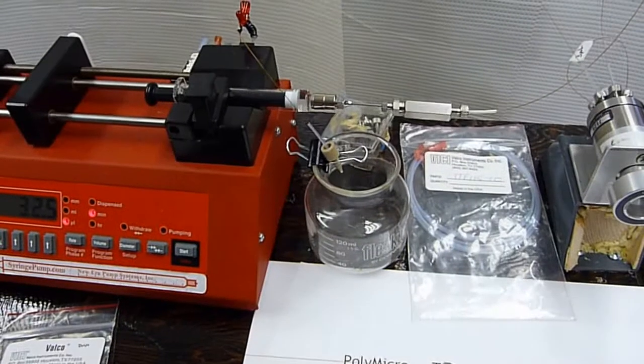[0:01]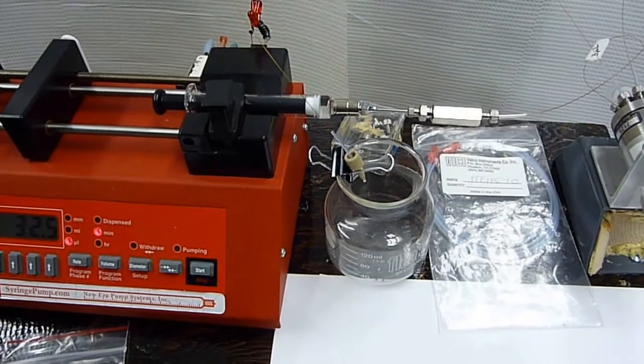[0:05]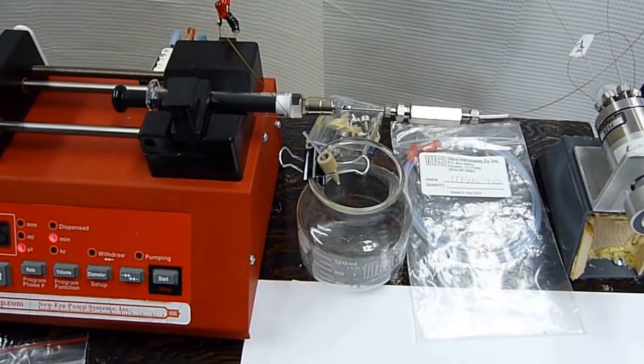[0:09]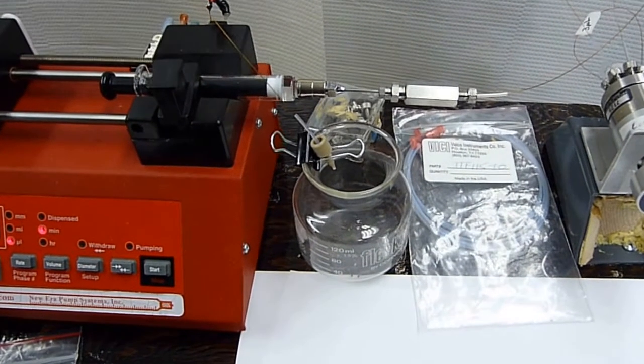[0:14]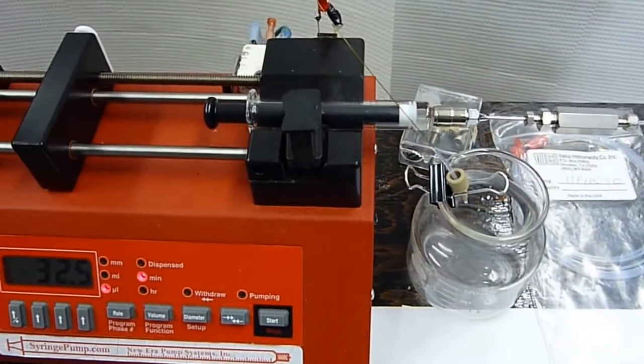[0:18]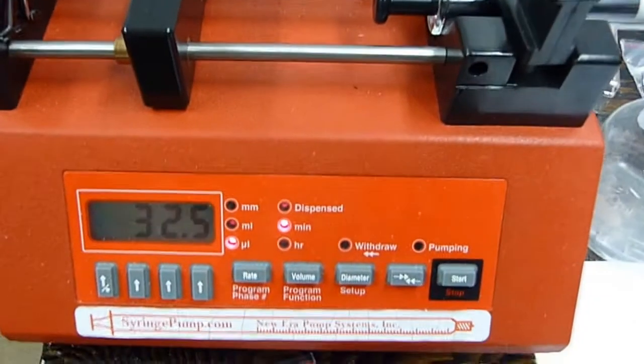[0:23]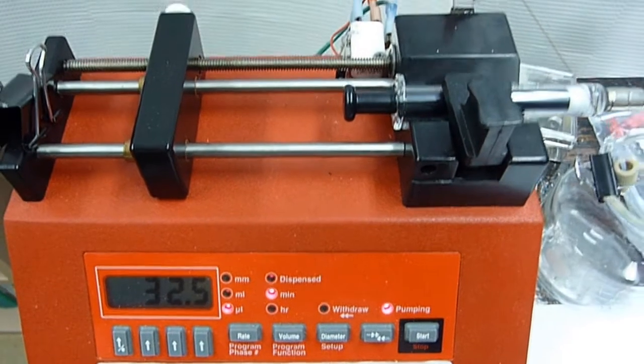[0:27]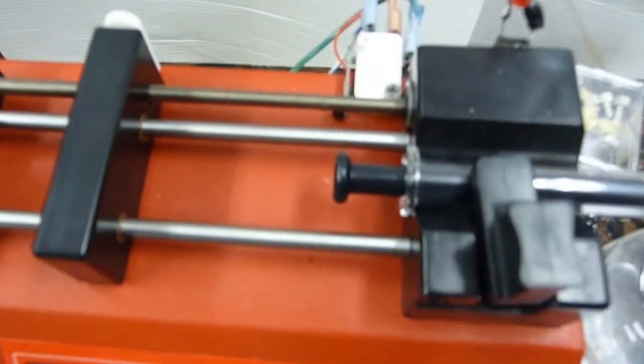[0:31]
This is a description of the setup for using straight chloroform to introduce a sample into the mass spec. Let me go over the components, starting with the syringe pump. So this is our typical syringe pump. It's infusion only, so it's relatively cheap, about $300.
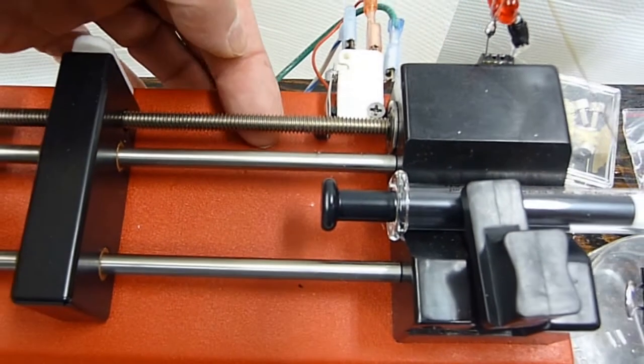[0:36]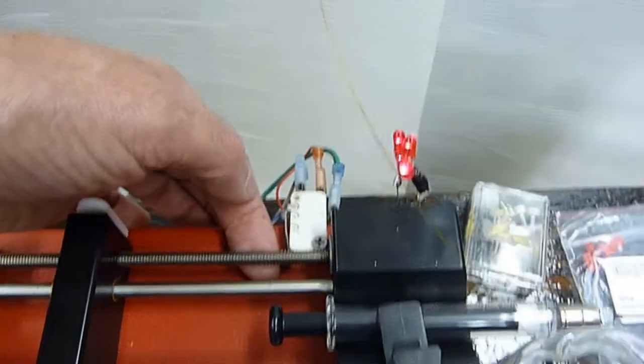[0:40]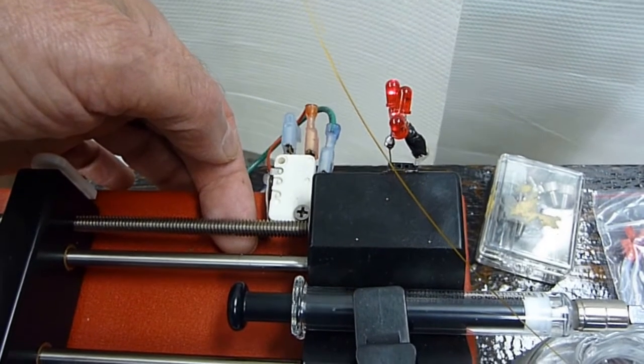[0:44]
And this one's been modified so that when it gets down to the end, it's going to press against this switch, and the lights will come on, indicating to the user that it's not pumping anymore.
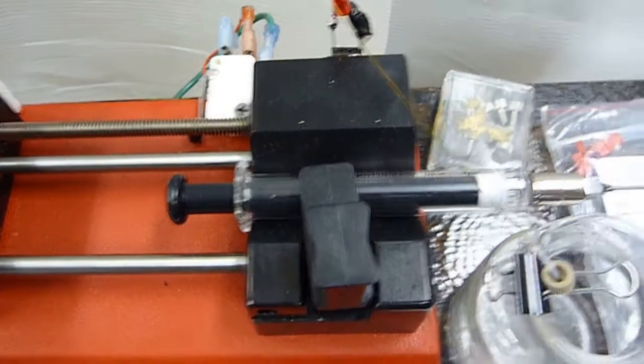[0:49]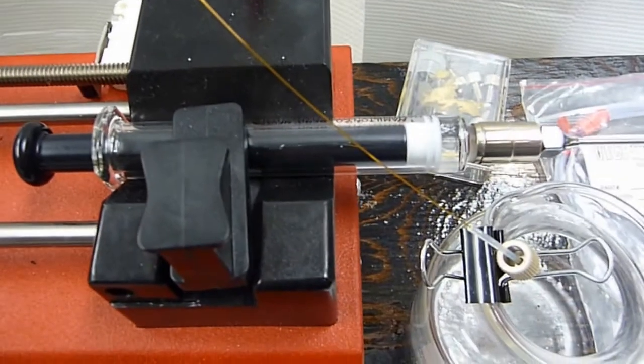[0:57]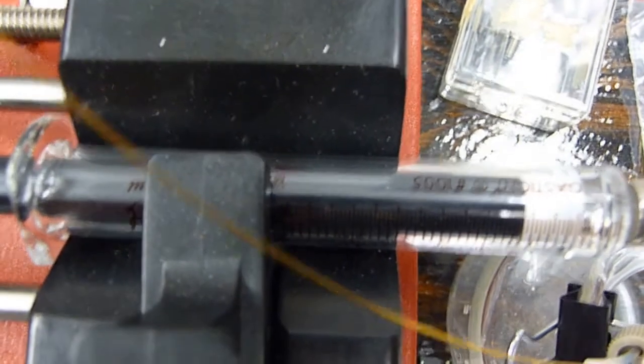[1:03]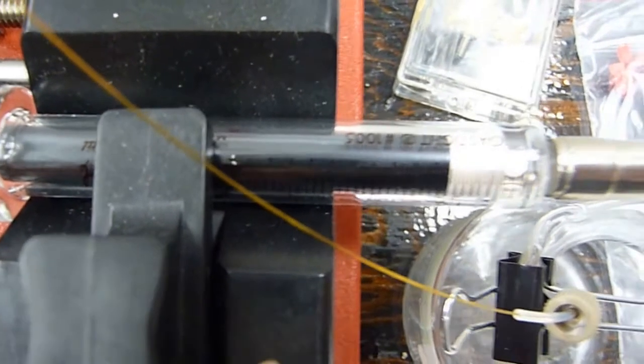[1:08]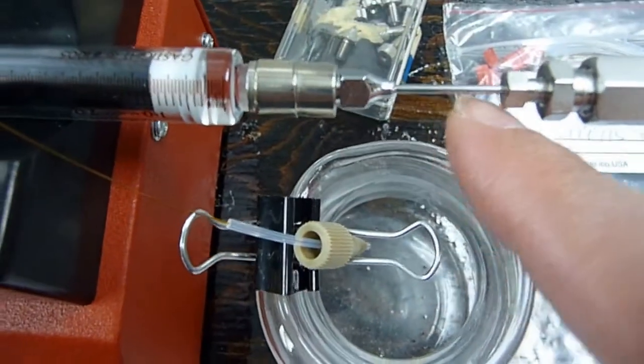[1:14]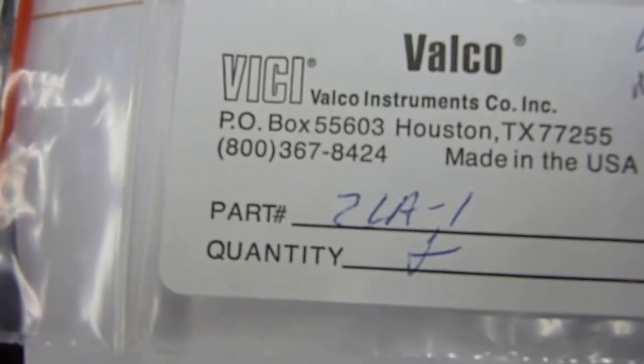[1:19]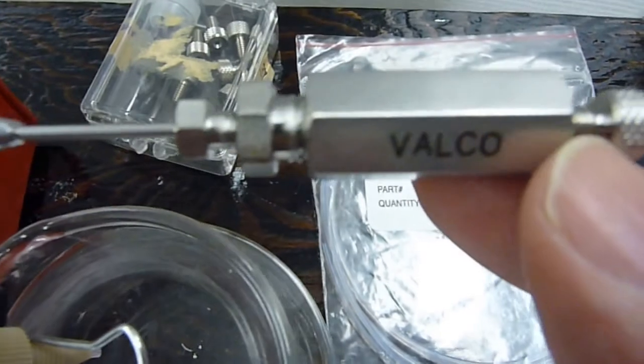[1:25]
And then we have our glass gas-tight syringe. So let me pull this out. Alright, so it's a Hamilton syringe, 5 ml, gas-tight, number 1005. And then that's connected via this Valco connector, so that is this part here. And then it's connected to a filter that has replaceable frits.
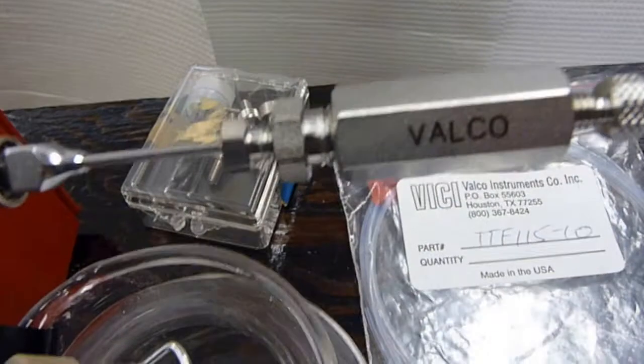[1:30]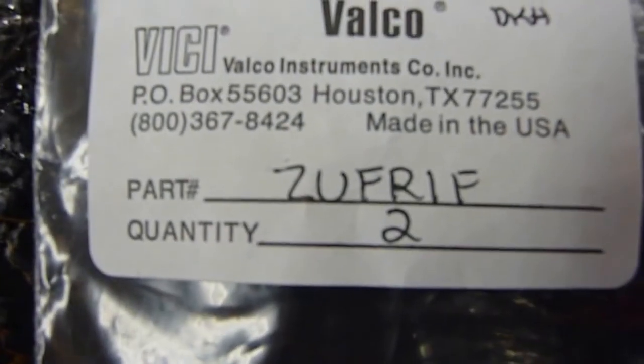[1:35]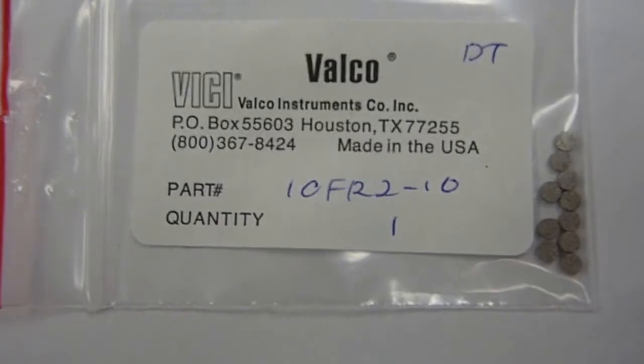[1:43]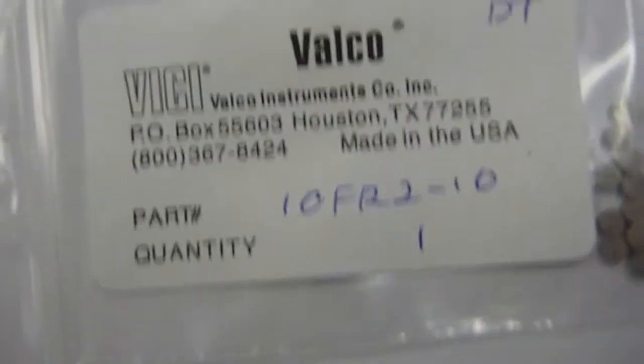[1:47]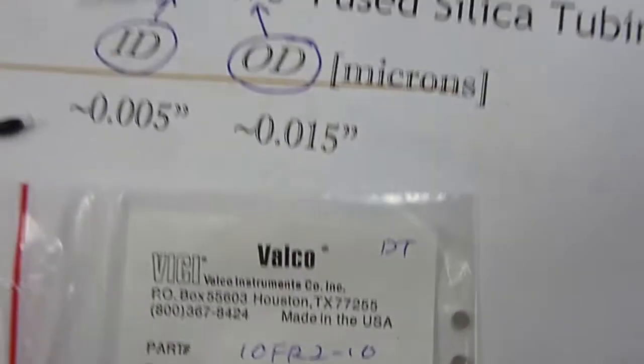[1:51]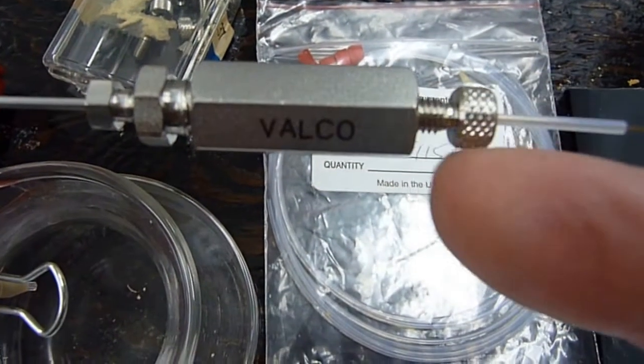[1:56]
And so this part is that. Got two of those. That's what the filter looks like in the pack. Let me get the filter; it has these cute little replaceable frits. Alright. 10 microns. So that's to filter the solvent. And then we have a connection with some fused silica tubing.
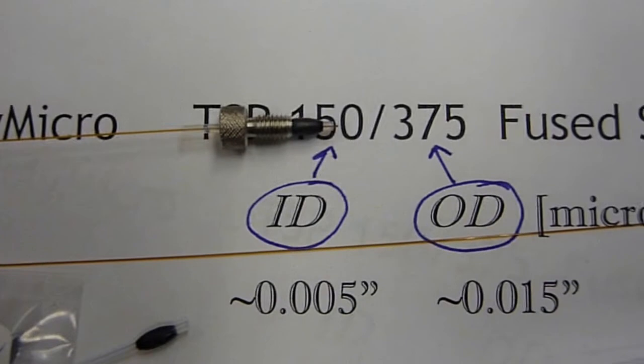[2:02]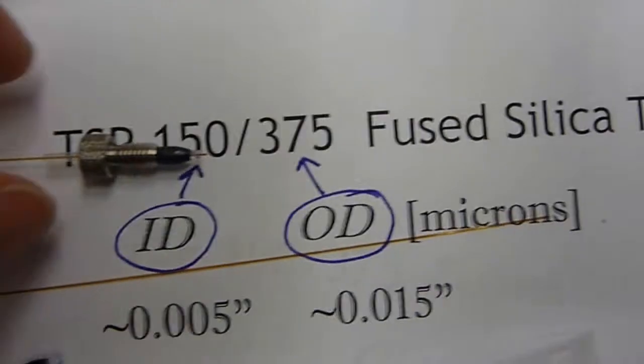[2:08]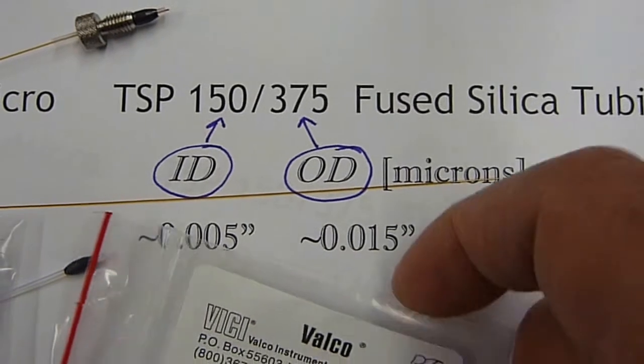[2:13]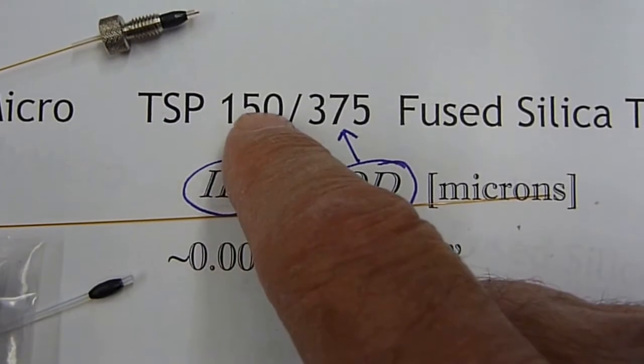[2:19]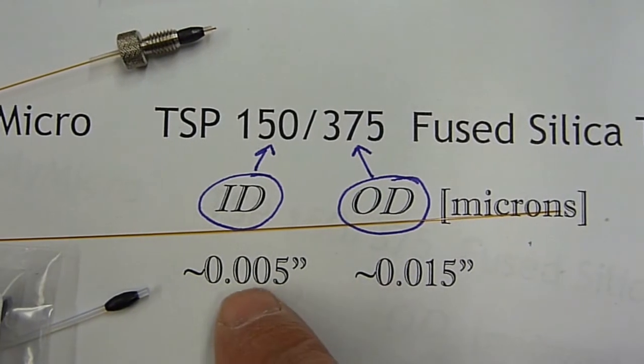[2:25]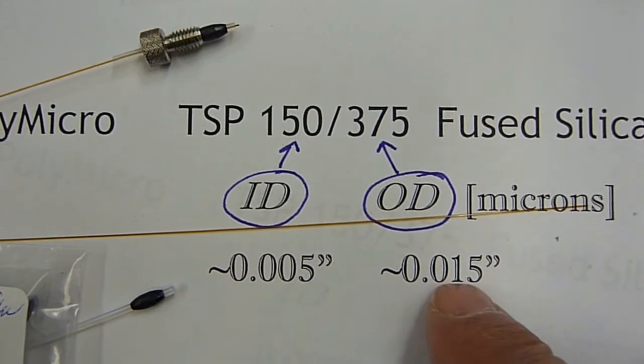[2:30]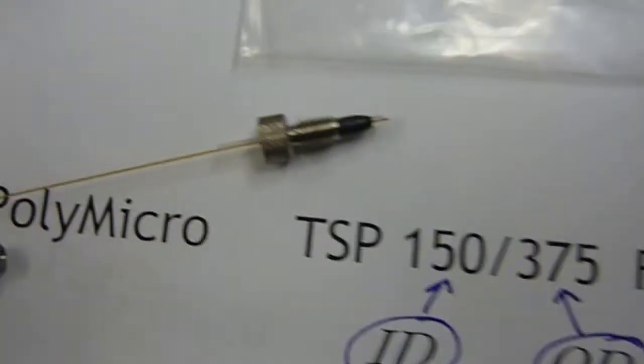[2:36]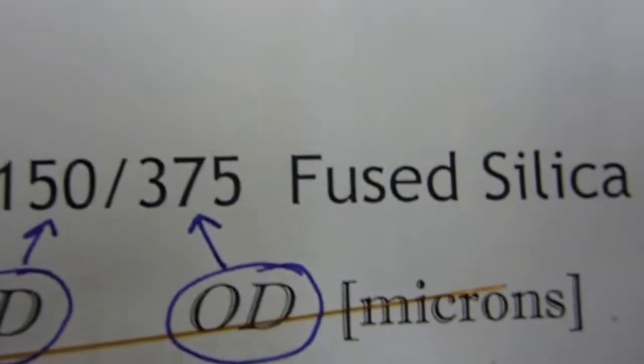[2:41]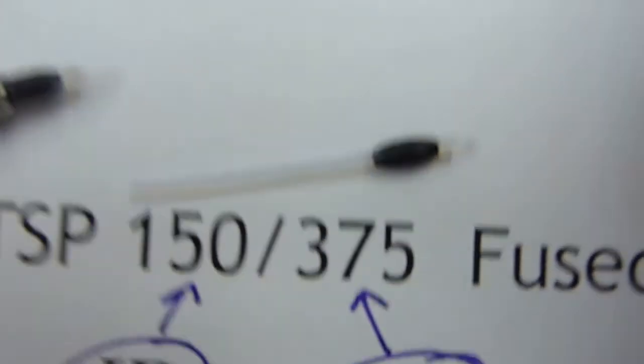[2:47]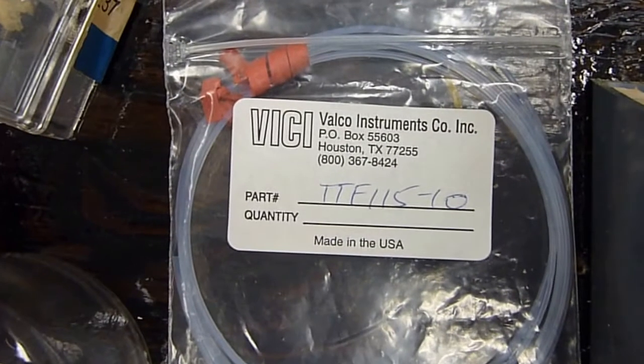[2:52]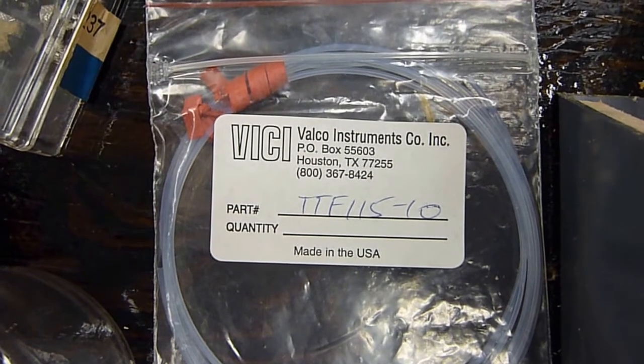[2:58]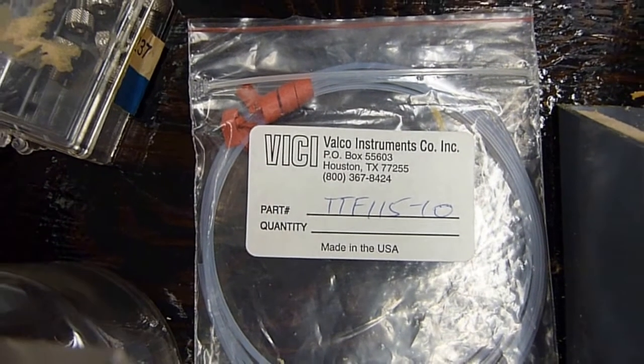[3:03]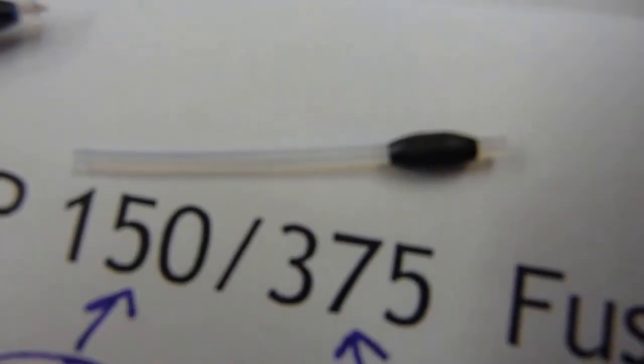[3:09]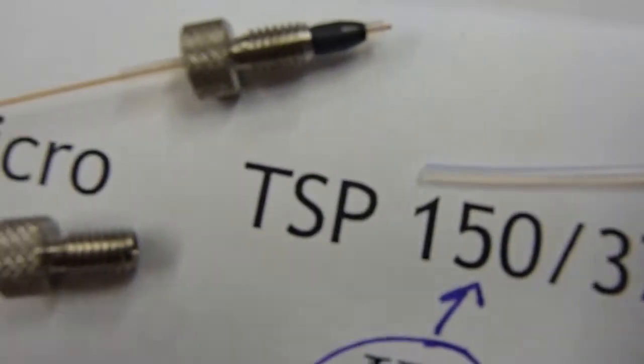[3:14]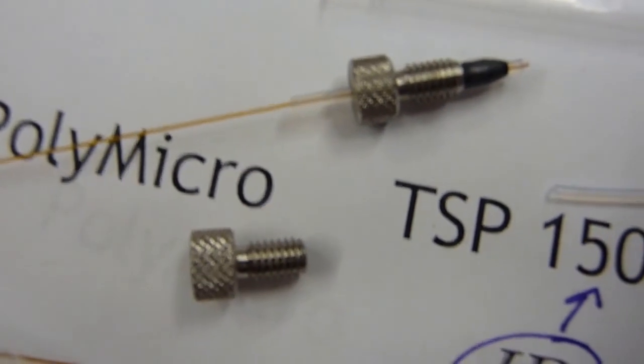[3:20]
And then for the adapter, use Teflon tubing. The Teflon tubing has an inside diameter of 15 thousandths, so the fused silica tubing will slide into the Teflon tubing. And then I like to use these double-sided ferrules and stainless steel finger-tight connectors. They're made by SSI, I think Fisher sells them in the U.S.
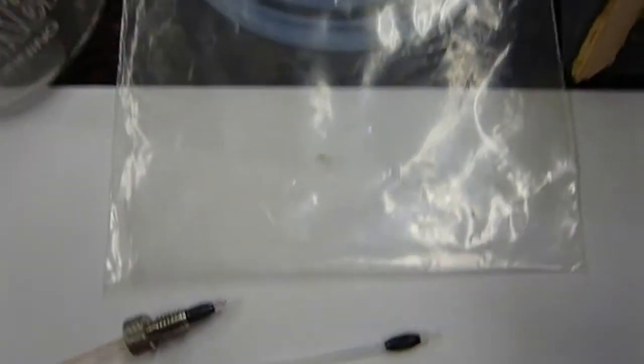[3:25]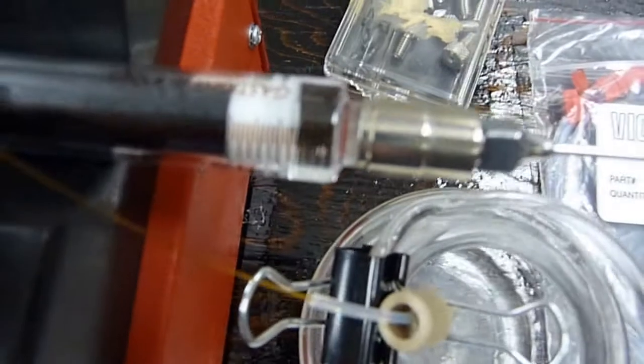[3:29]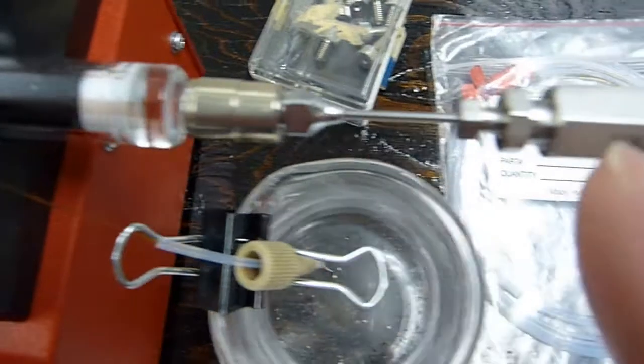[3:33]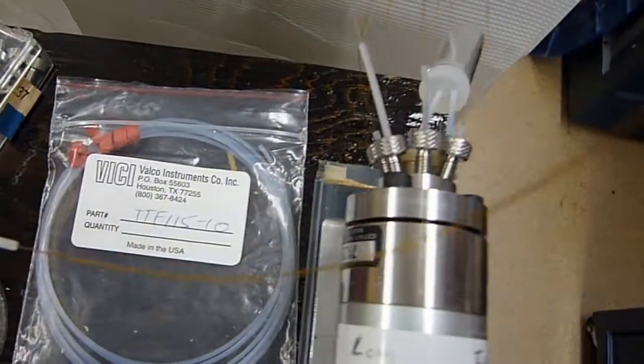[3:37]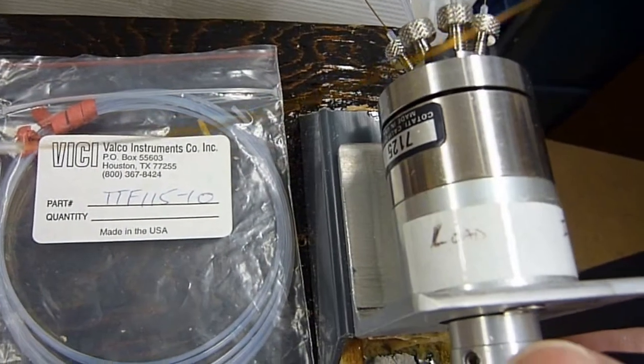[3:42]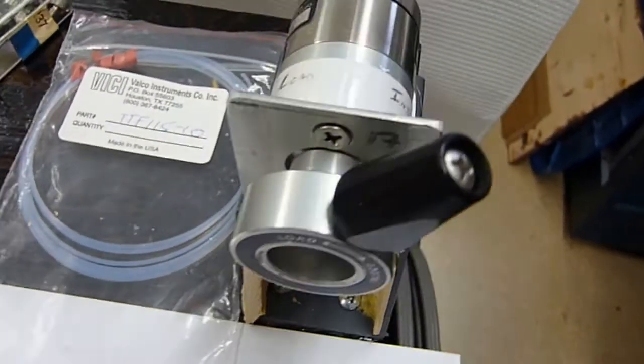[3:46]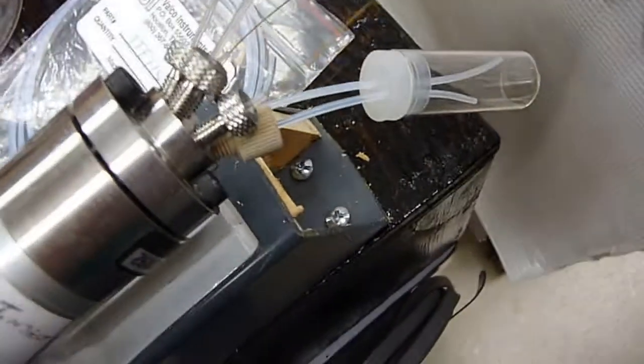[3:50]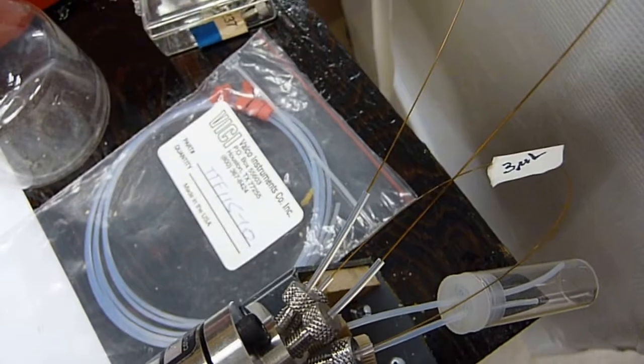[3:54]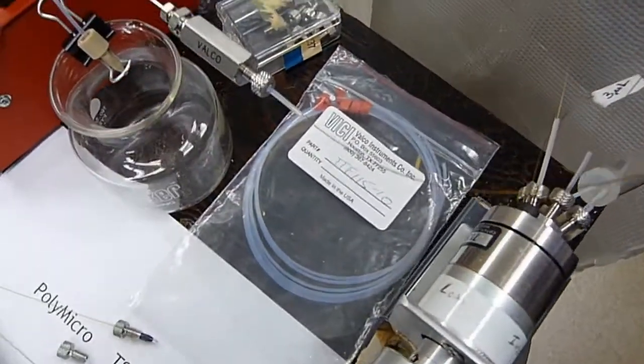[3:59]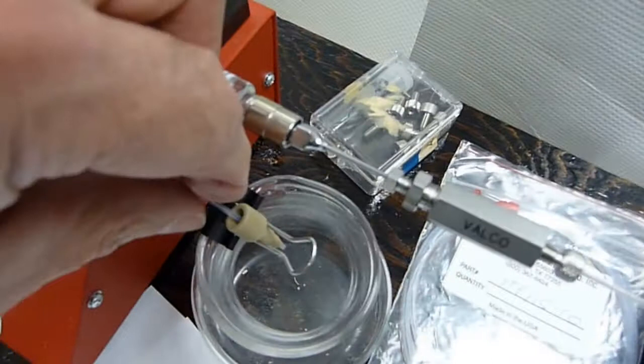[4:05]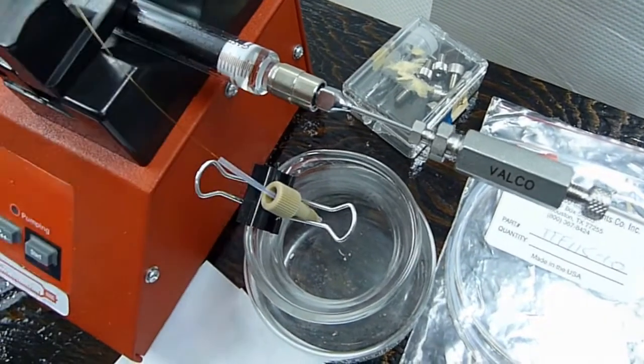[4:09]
So far, all the chloroform is going to see is the Teflon on the plunger, stainless steel, fused silica, and then it makes its way to the classic 7125 Rheodyne valve. And then this has been set up, so we have a 3 microliter loop, and it's a 6-port injection valve, and the solvent makes its way to this, which is what's going to be connected to the mass spec.
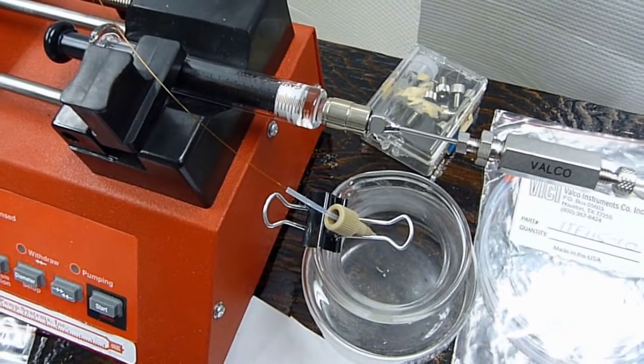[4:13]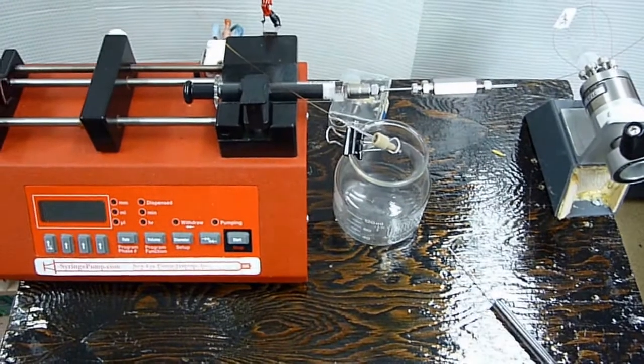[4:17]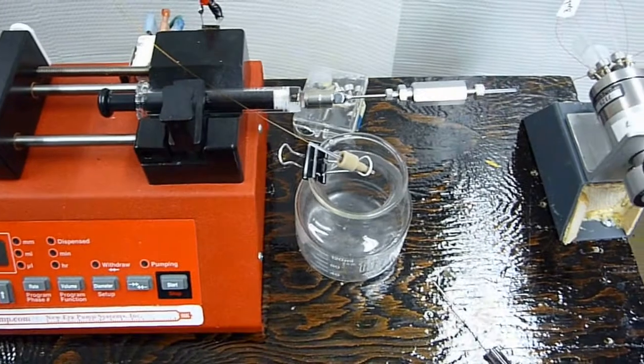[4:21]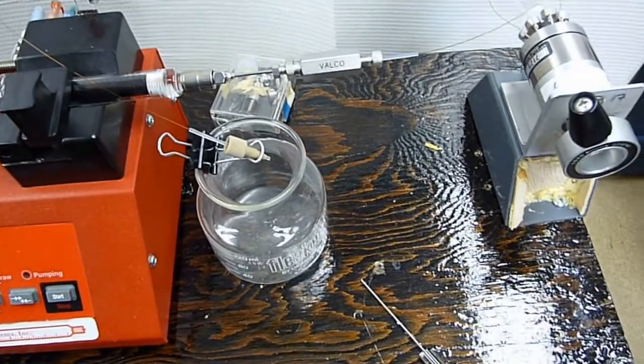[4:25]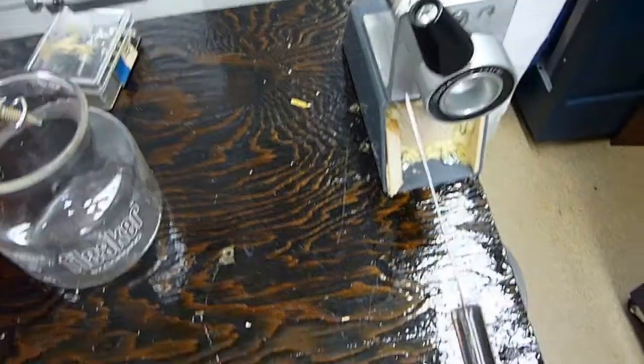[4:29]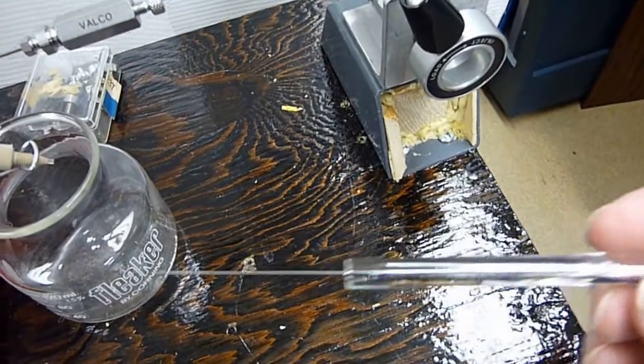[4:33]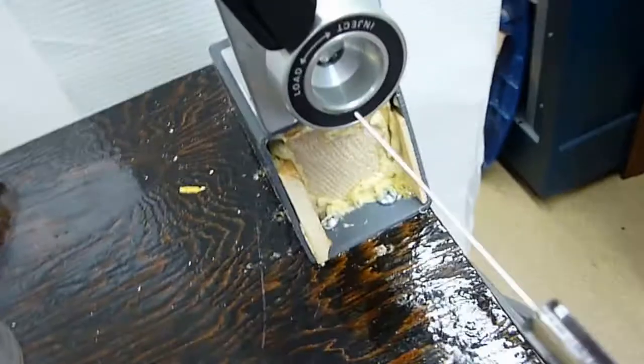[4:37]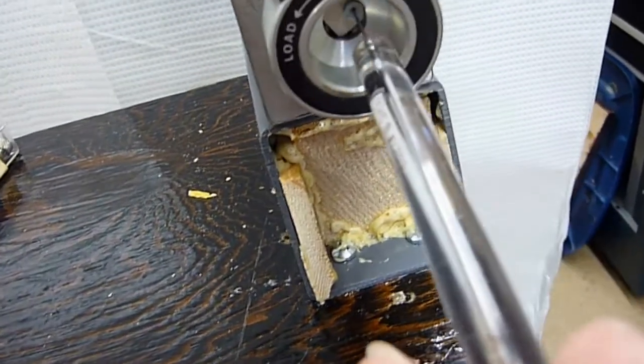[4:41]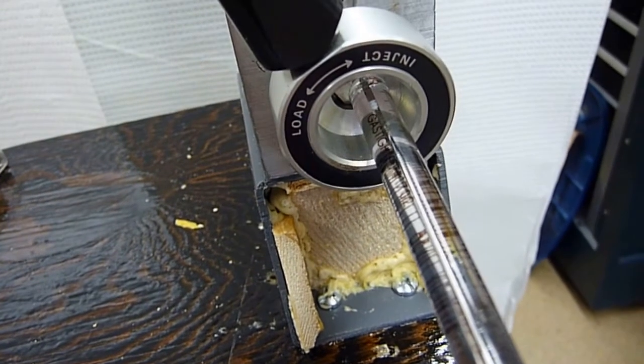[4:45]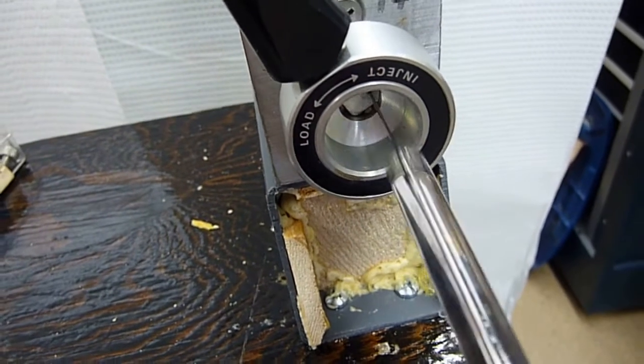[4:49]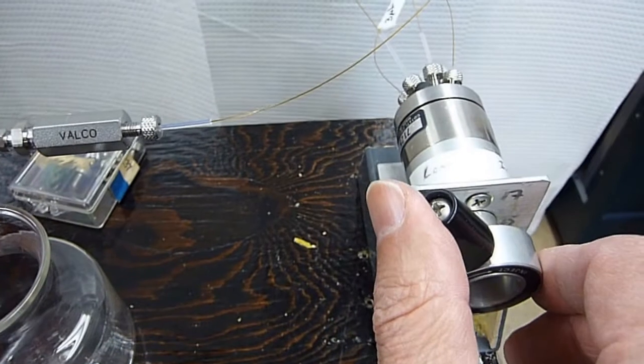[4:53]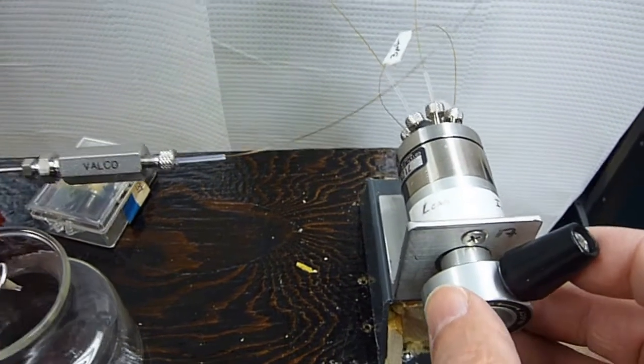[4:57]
So next we'll take it up and hook it up to the mass spec. The system is on the cart right now, just for convenience as far as moving it around and keeping it out of harm's way. The sample is going to be in the typical gas-tight, blunt-nose, 25 microliter syringe, and the sample will go through the needle guide like that, and then be introduced and undoubtedly overfill the 3 microliter loop. And then you'll have injection by moving it that way.
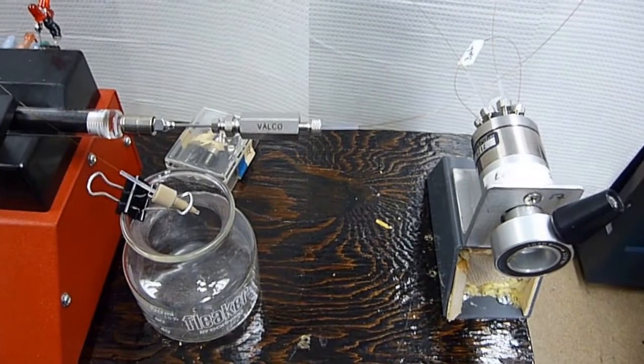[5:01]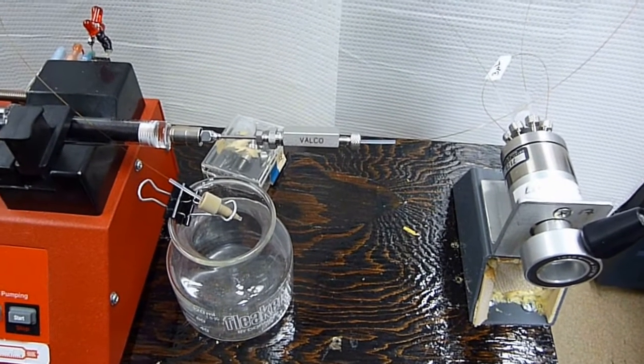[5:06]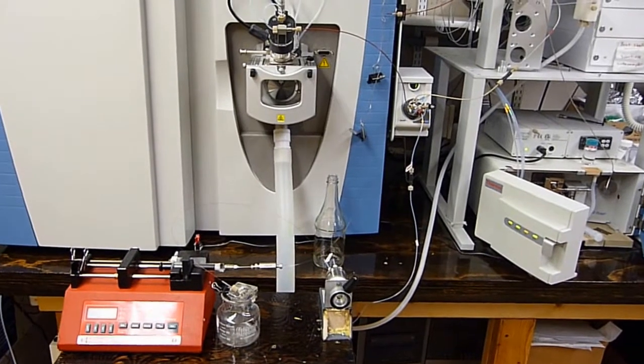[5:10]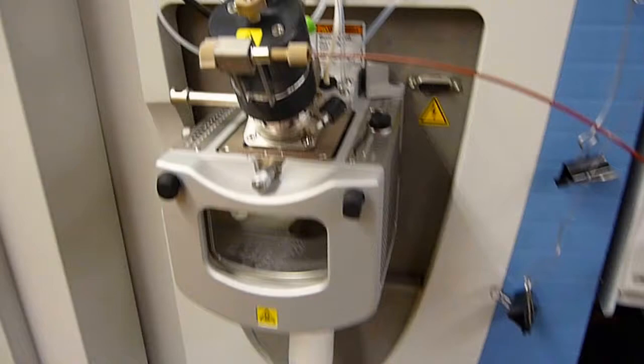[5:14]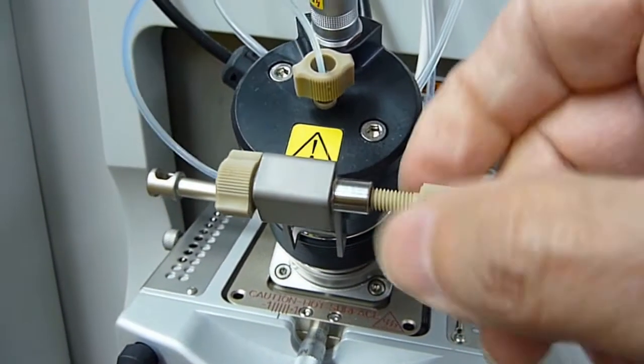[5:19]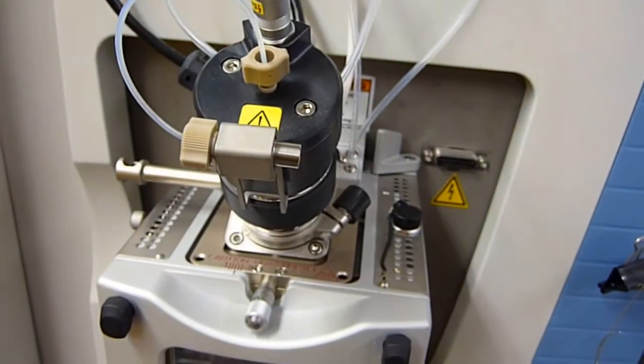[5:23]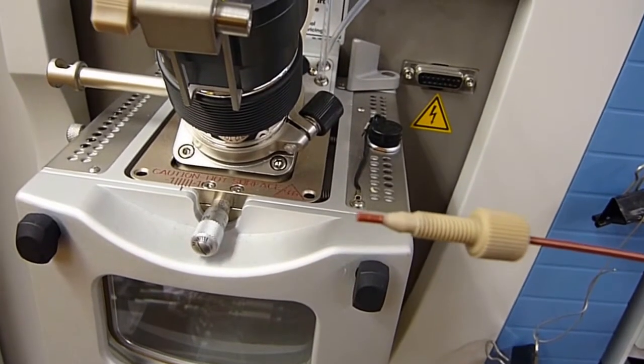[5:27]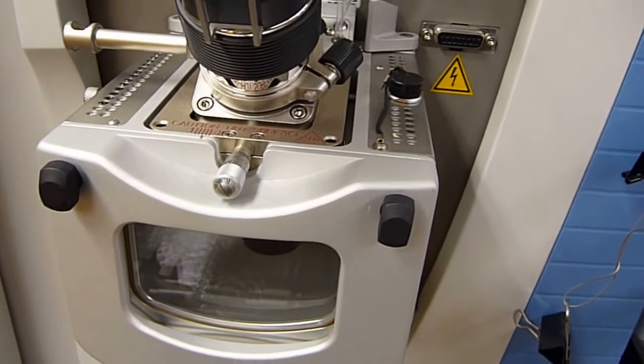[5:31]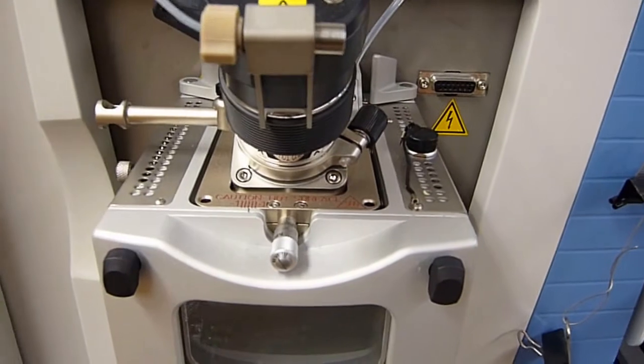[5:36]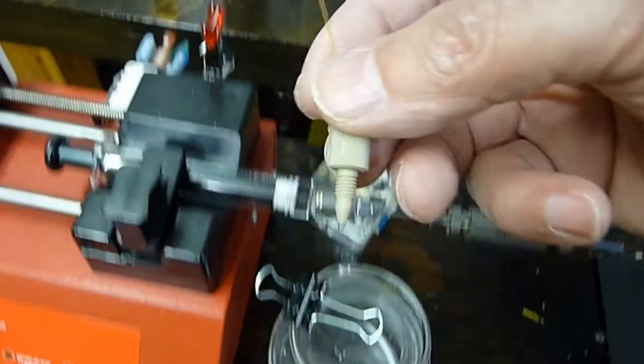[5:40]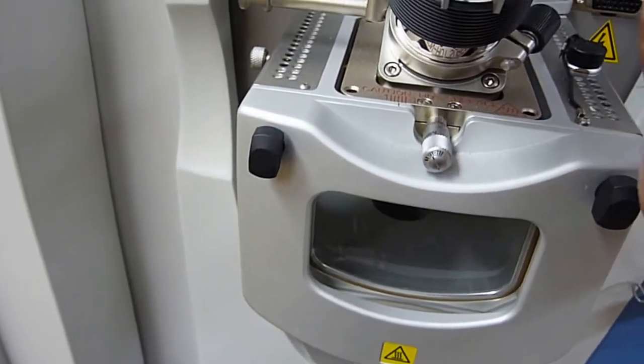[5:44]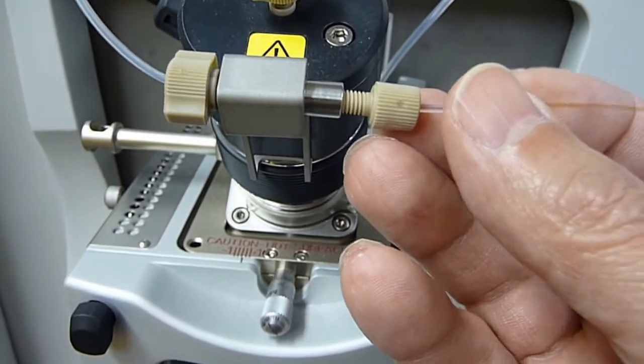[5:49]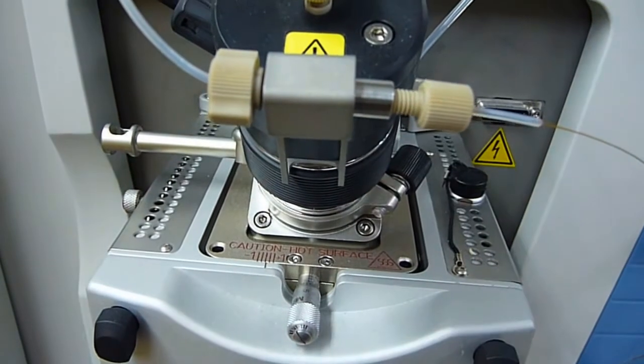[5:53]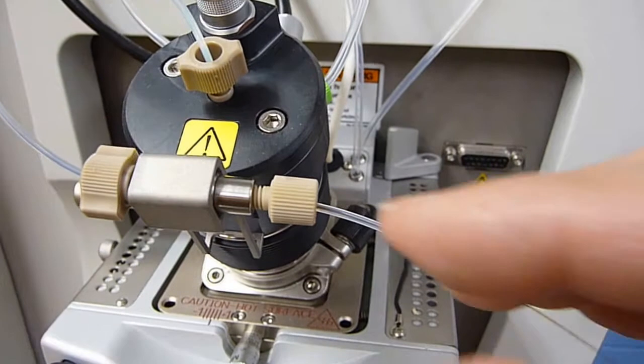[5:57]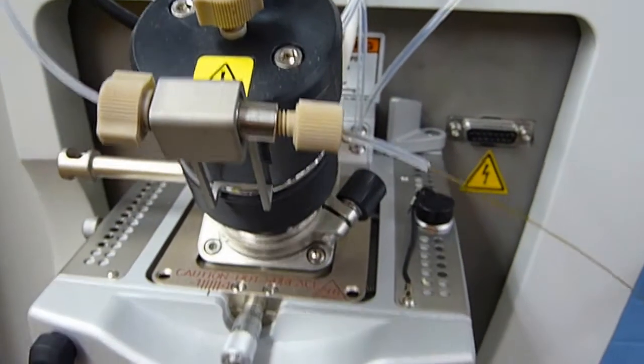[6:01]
So let's get up to the front end of the mass spec and show how that connection works. So, wheeled up the syringe pump, and then what's going to happen is that this connection, well, the HPLC pump is turned off. So this would be the flow from the HPLC column, or the pump, and then it's just a matter of hooking up this guy here, and since the pressure is relatively low, let me pause this. It's easier with two hands to make this connection, and this is a typical Upchurch finger-tight connection.
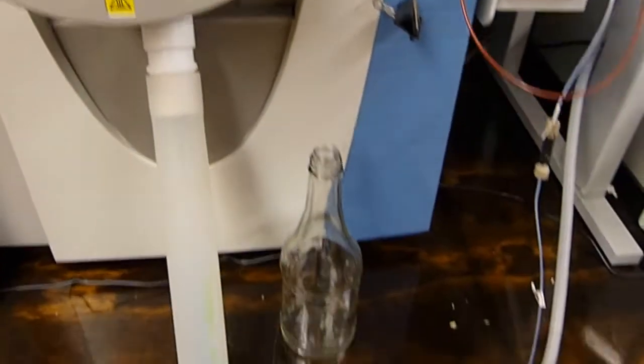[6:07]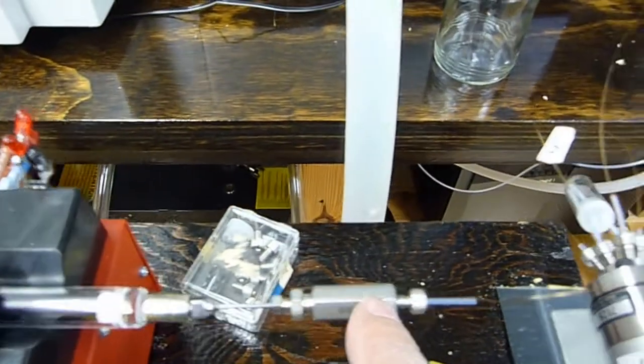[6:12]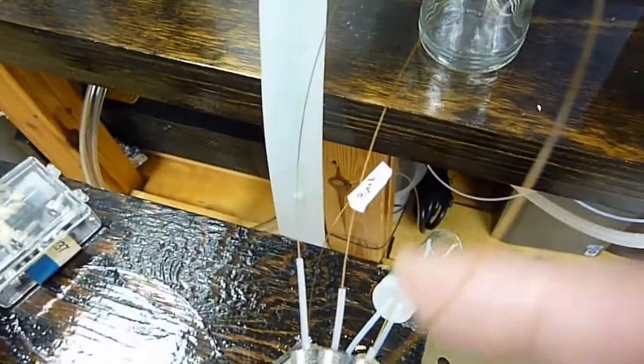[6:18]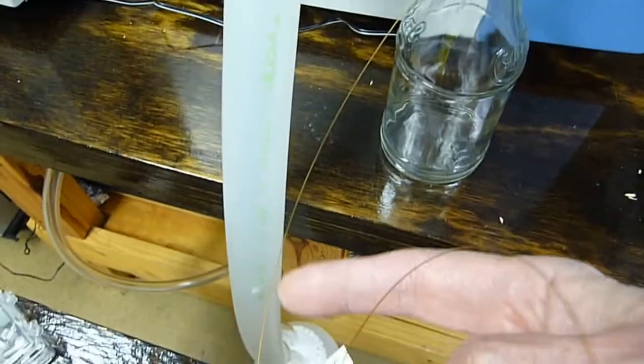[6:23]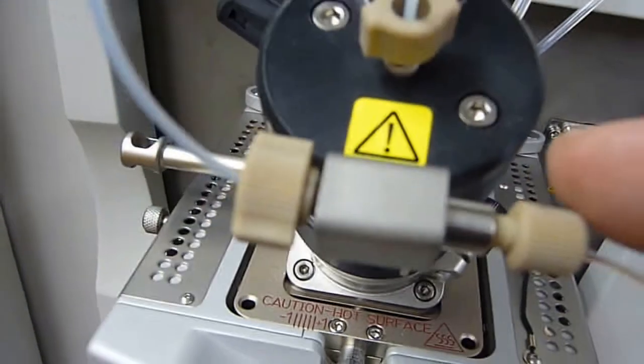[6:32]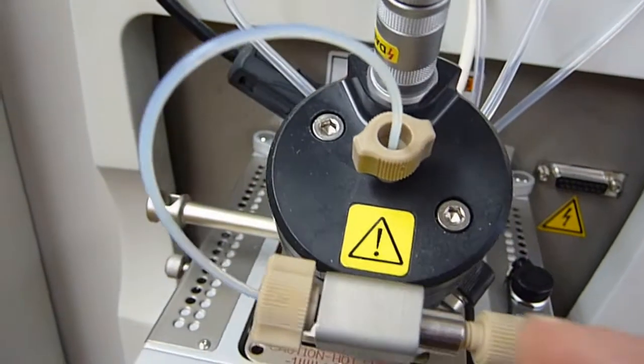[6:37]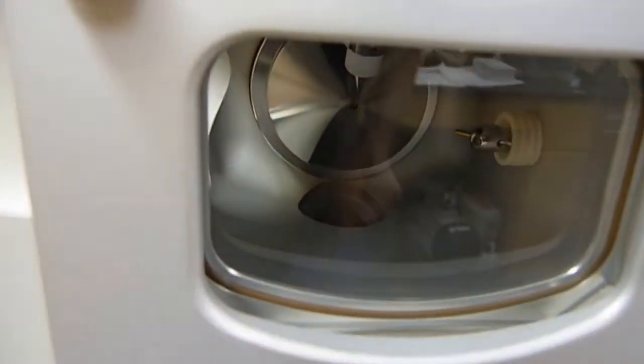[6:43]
And so if we go back over the system, we have our chloroform going through the filter, making its way through a 6-port injection valve. And then over here is the flow out. That's into the injection and makes its way to the electrospray source. There's a little bit of Teflon tube in here as it makes its way to the source needle, and then to the mass spec.
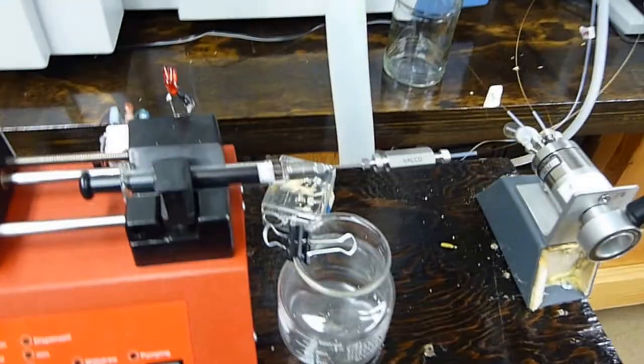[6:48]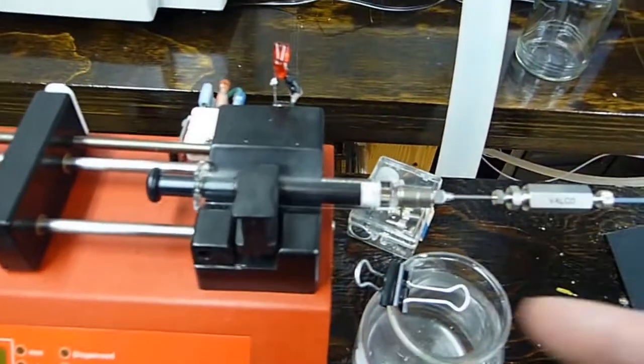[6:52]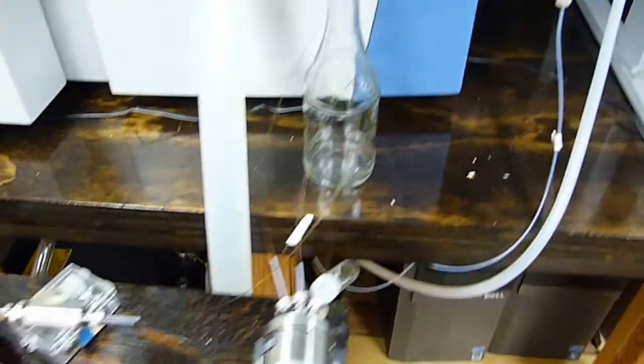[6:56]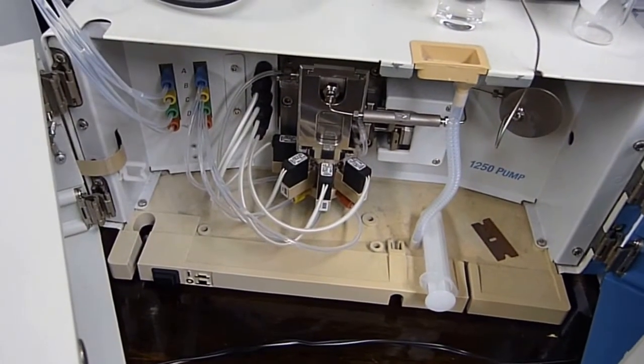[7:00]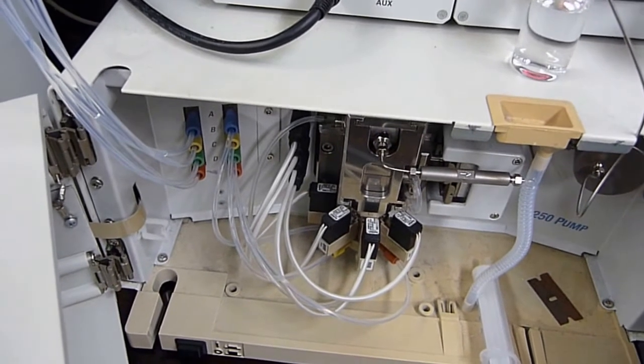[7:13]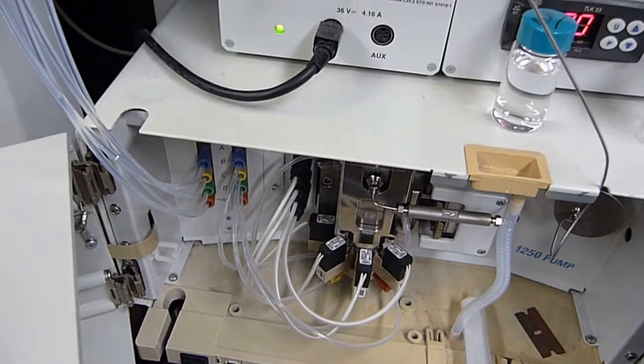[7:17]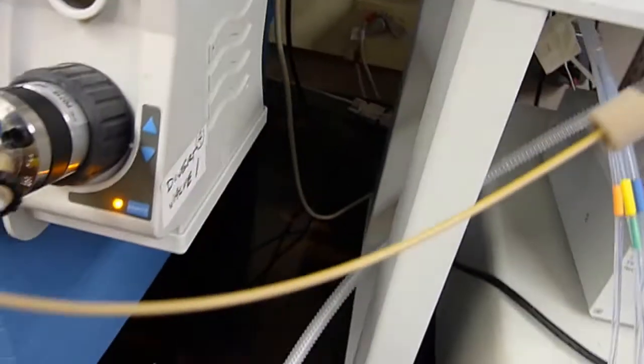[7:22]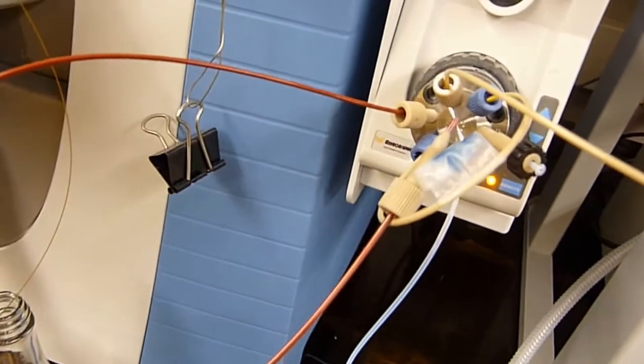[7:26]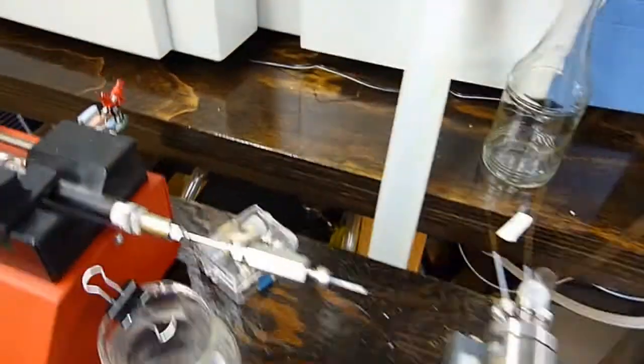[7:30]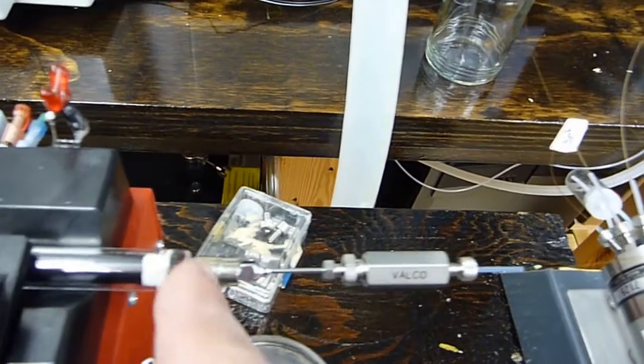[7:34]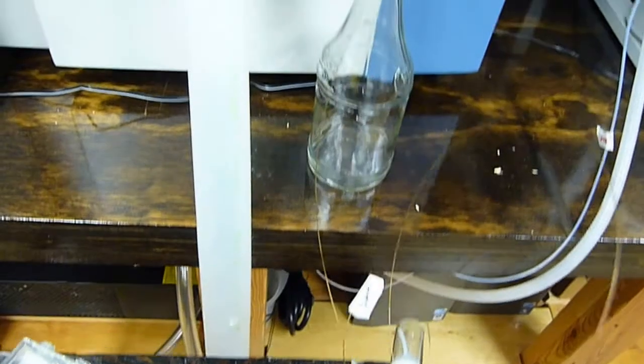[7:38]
And why go through the trouble of having a manual injection valve and a syringe pump? Well, there is great reluctance to put chloroform in our good HPLC 4-solvent pump. What it would do to seals on a long-term basis, and chloroform is not acetonitrile. It's definitely more aggressive in my opinion. And then the other item is what the chloroform would leach from the PEEK tubing. Who knows? So in this setup, all the chloroform is going to see are some occasional Teflon surfaces, stainless steel, and fused silica.
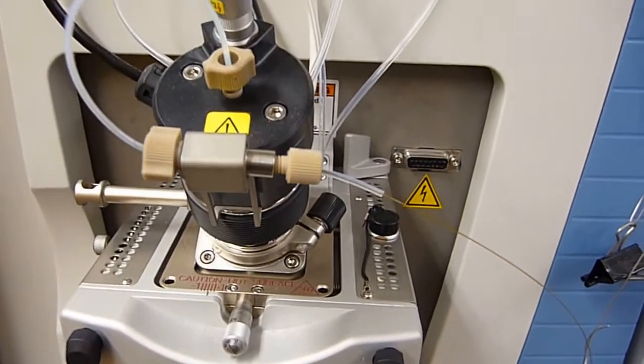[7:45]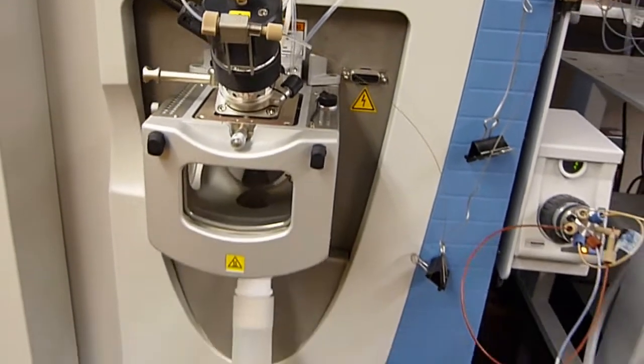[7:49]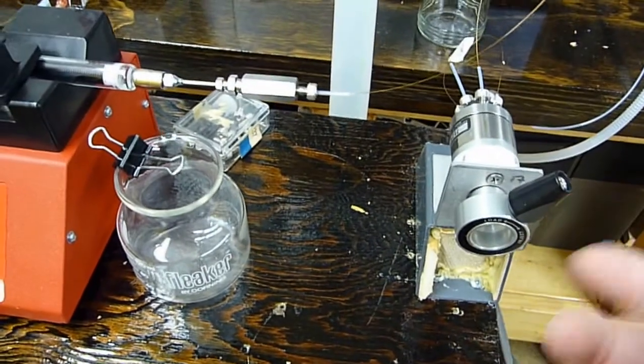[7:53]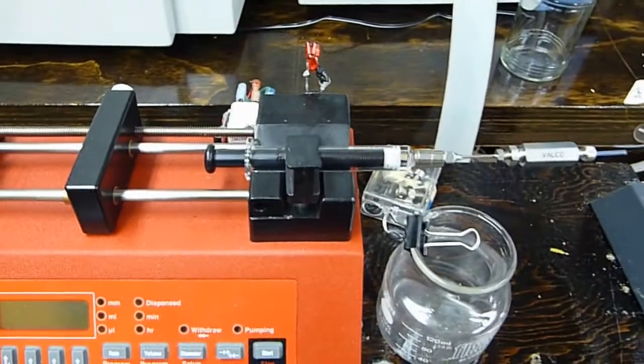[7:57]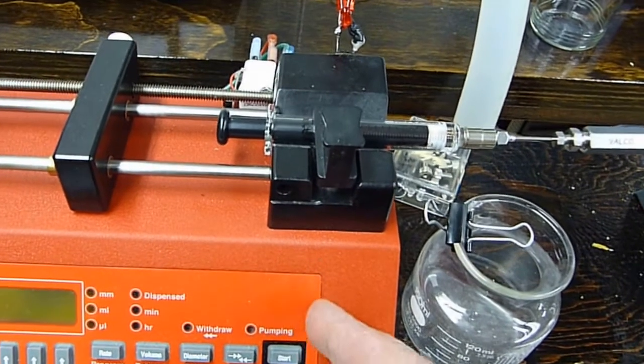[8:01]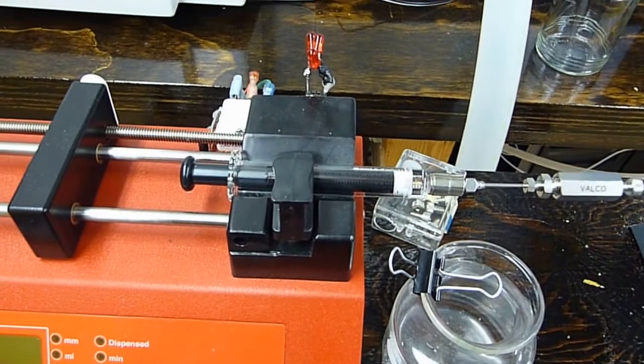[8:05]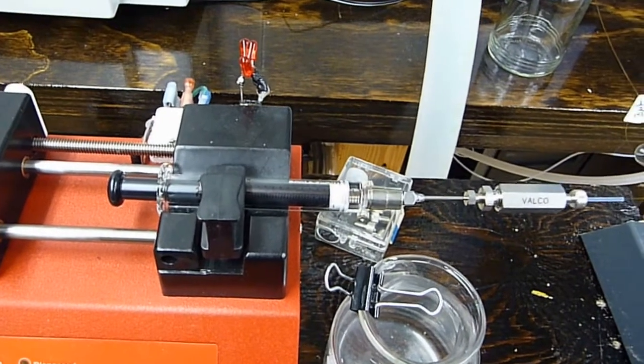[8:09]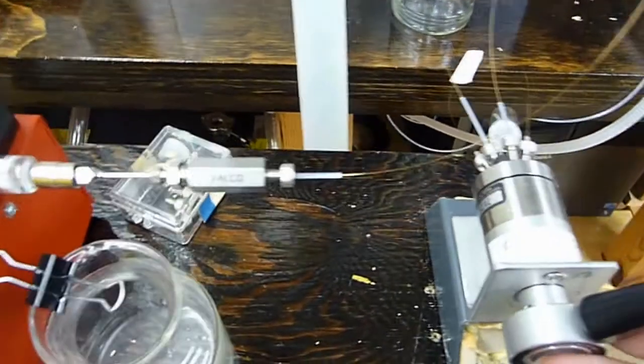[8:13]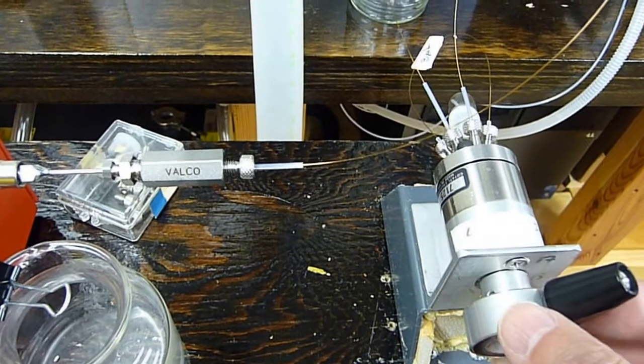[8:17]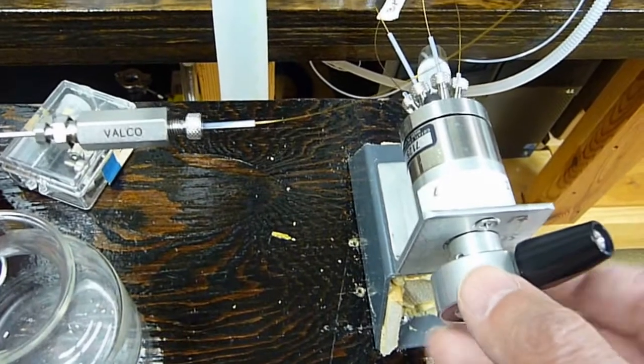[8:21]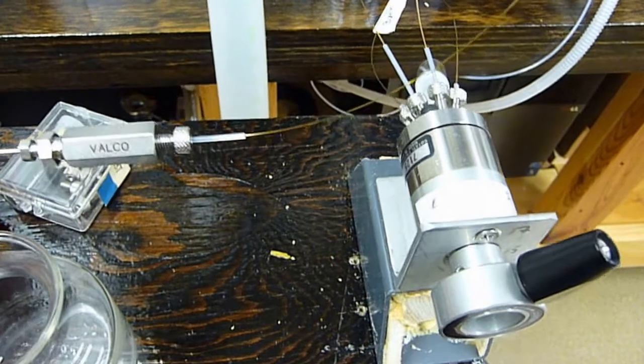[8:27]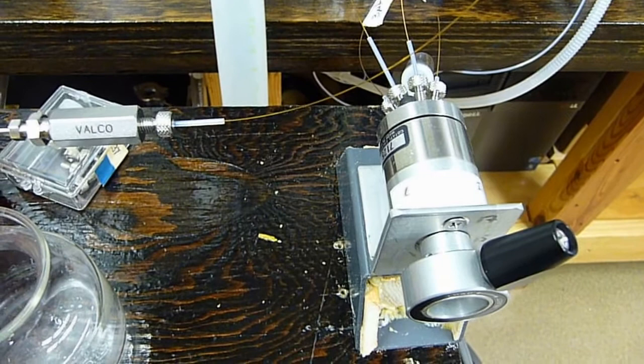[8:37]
This is our waste container. And so if anything goes wrong, then replacing a Rheodyne valve or a $300 syringe pump, although the chloroform's not going to see the gas-tight 5 ml syringe, which is definitely less than $100. The Rheodyne valve is in the range nowadays of probably about $700 to $1,000. There are Japanese clones that are about $400. This seems to have held up well, I would say, with so far roughly about 2 days exposure to chloroform.
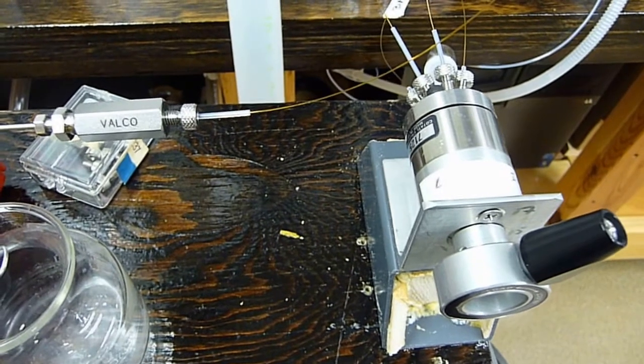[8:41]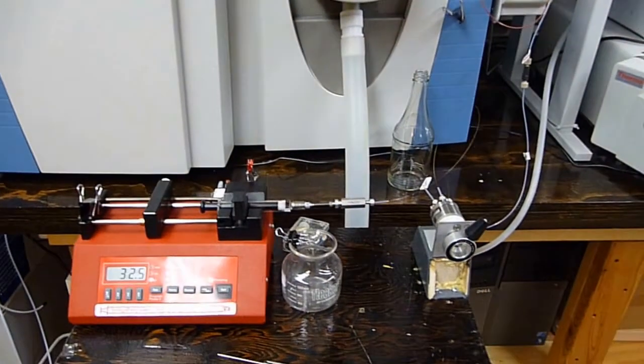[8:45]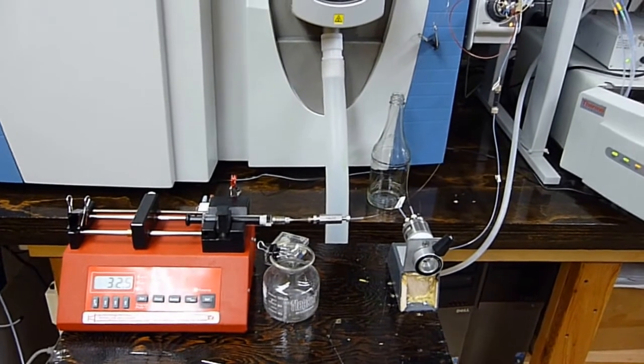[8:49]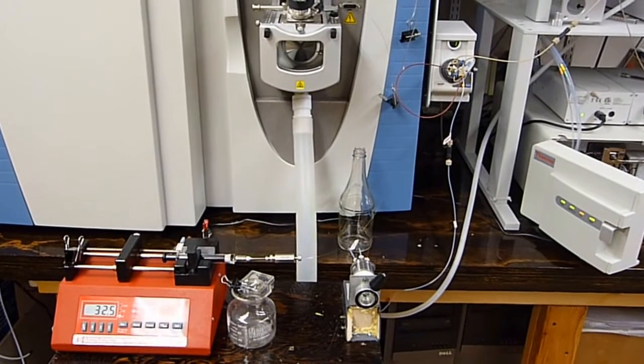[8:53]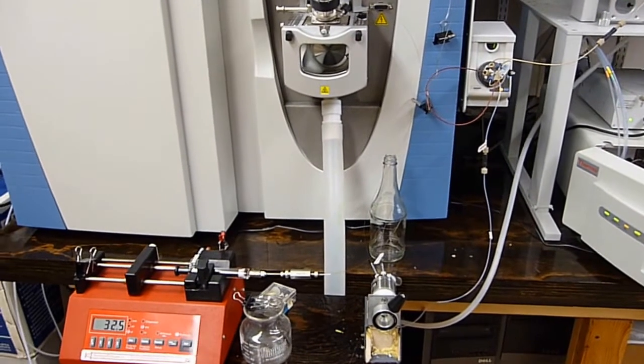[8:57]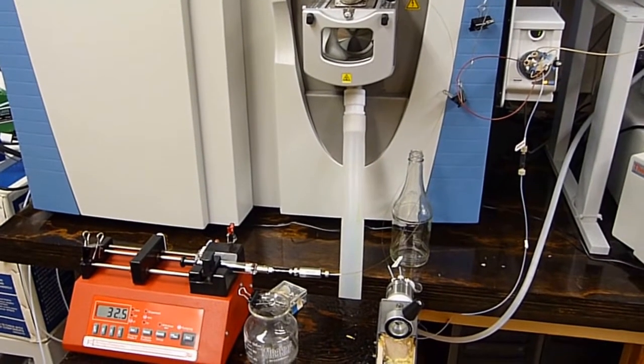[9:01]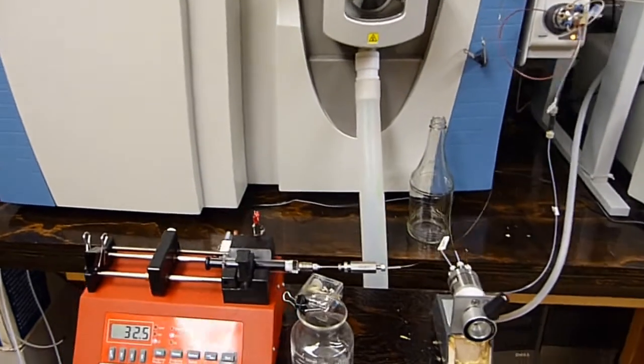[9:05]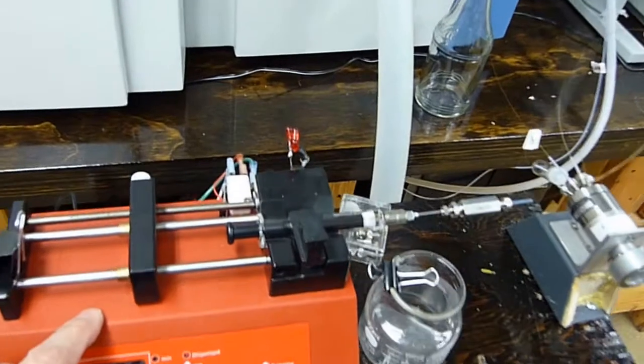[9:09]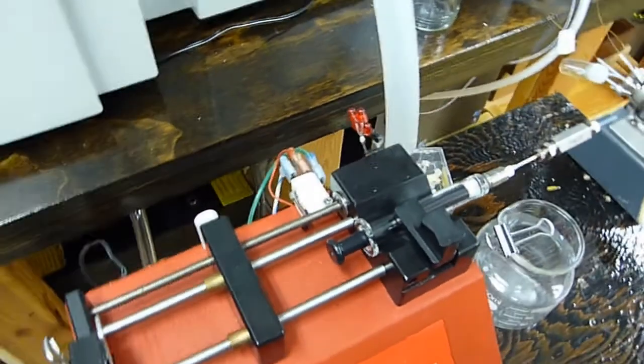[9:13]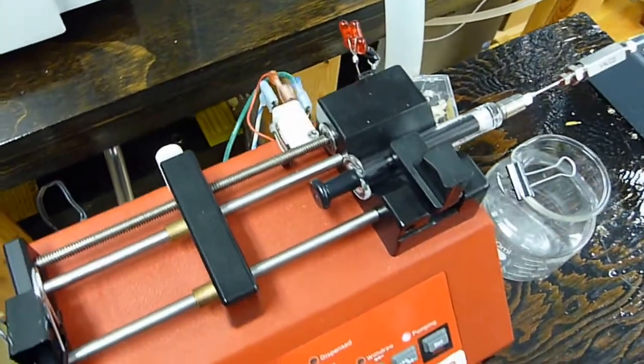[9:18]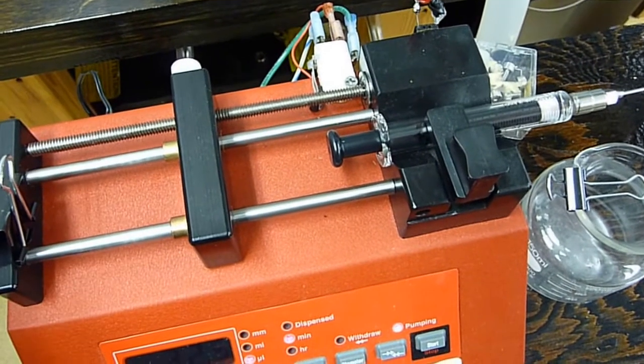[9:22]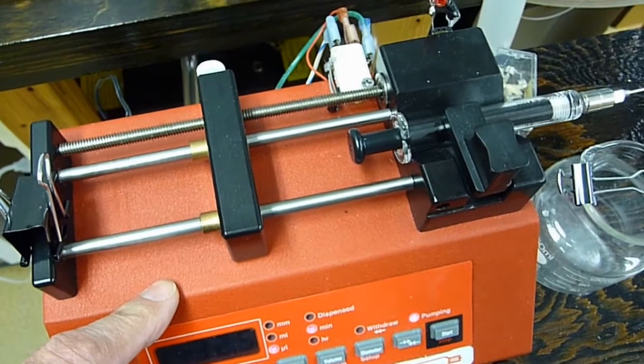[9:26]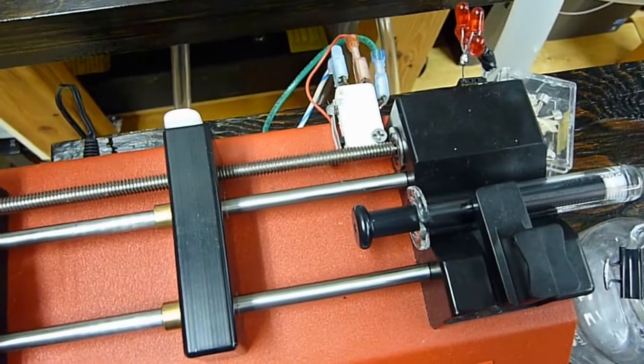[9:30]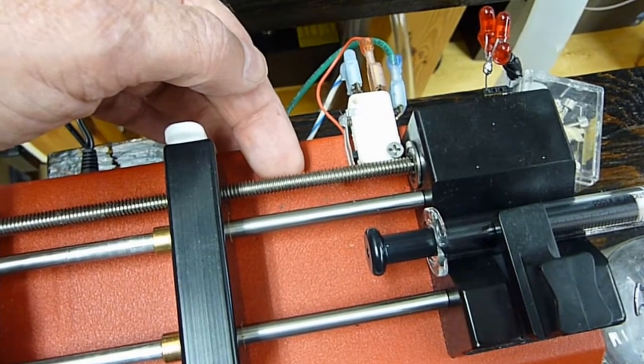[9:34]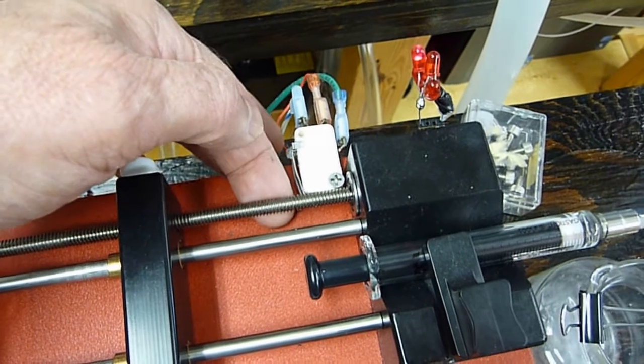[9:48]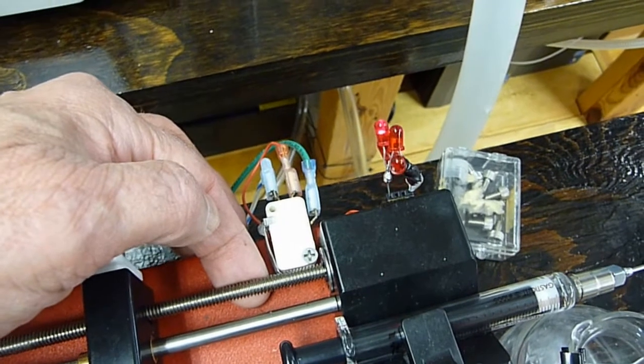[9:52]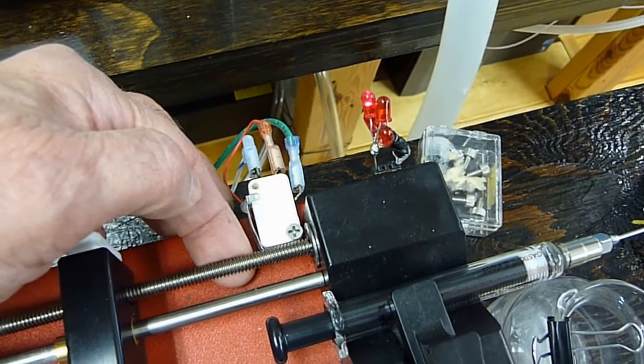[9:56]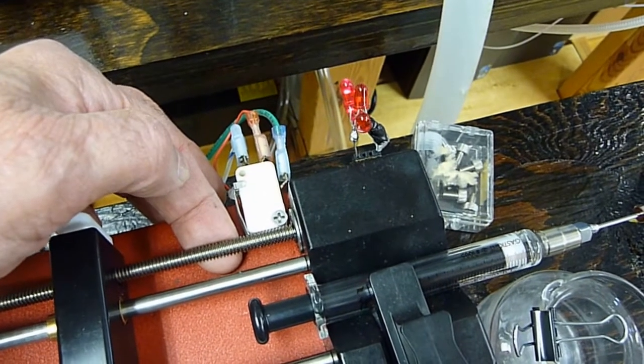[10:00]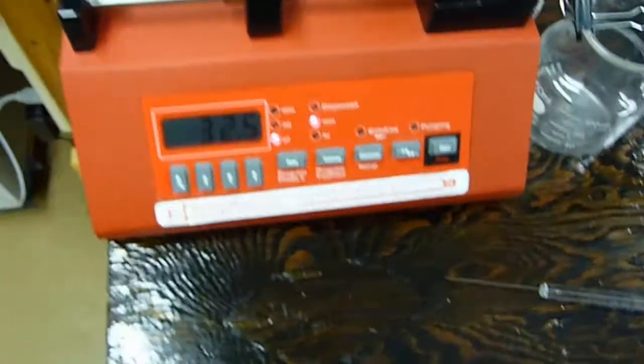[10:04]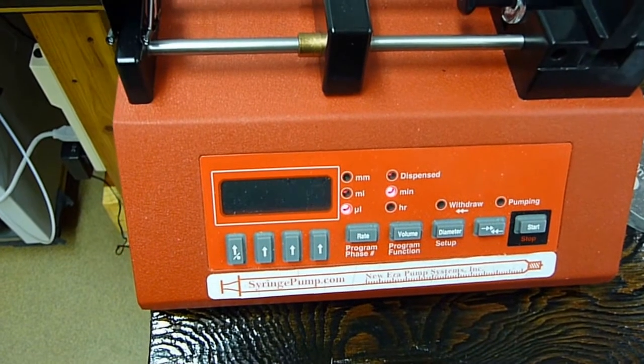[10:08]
So, this is the setup for having a sample dissolved in chloroform and making its way to the electrospray source for getting some mass spec data. As far as this syringe pump and the modification, there's a YouTube video on that. The advantages of this syringe pump are it's relatively inexpensive and can be modified. At least I was able to modify it fairly cheaply, and it does not become a syringe crusher when it bottoms out, because when it hits the switch, that diverts the action, and the LEDs, especially if you get blinking LEDs, will let you know that pumping has stopped. Typical flow for this is on the order of 2 mils an hour.